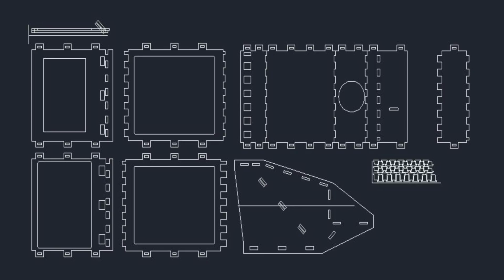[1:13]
Since my last video, I've had a couple of projects that I've been working on. One project came directly from the comments section after multiple comments related to, "It looks like you're reading a script in your videos." All I can say to that is, well, yeah, of course I'm reading a script. For all of the videos that aren't shot run and gun style on my cell phone, I write out a script, edit it to make sure that the ideas and concepts that I'm trying to convey are going to be easily understood. Then I sit in front of my camera, recording it over and over until I finally get a version of it that isn't absolutely terrible.
So I decided that I should take heed to the counsel I was getting from the comment section and go shopping for a teleprompter. I have to say that I was a little taken aback to see that a box with one of the sides set at 45 degrees and a 10 by 12 inch piece of single-strength glass was going for $150. So instead of just being done with it and pressing buy it now, I decided to spend about $600 worth of time and $25 in material to fabricate my own.
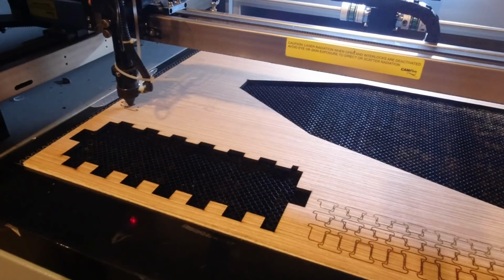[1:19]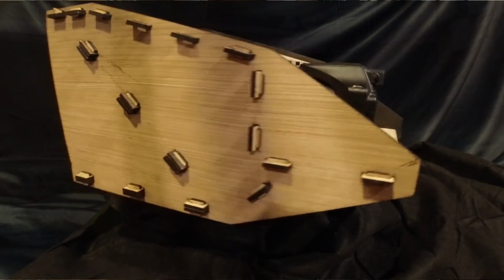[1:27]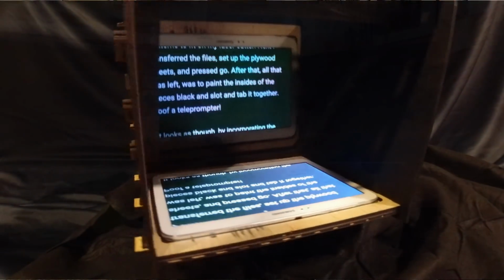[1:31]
As with all of my projects, I started out by drawing it up in AutoCAD and nesting the flat patterns to fit on my laser cutter. Next, I transferred the files, set up the plywood sheets, and pressed go. After that, all that was left was to paint the insides of the pieces black and slot and tab it together. Poof! A teleprompter! It looks as though, by incorporating the teleprompter into my video production, I'm able to get rid of the terrible reflections that I get in my glasses when I shoot my videos sitting at my desk looking out the window.
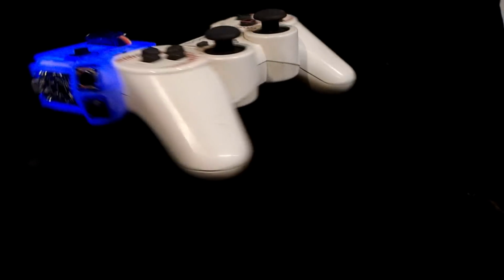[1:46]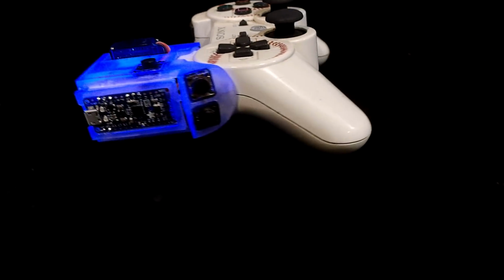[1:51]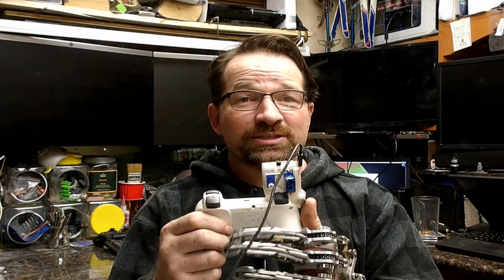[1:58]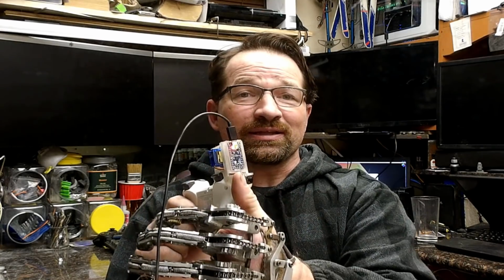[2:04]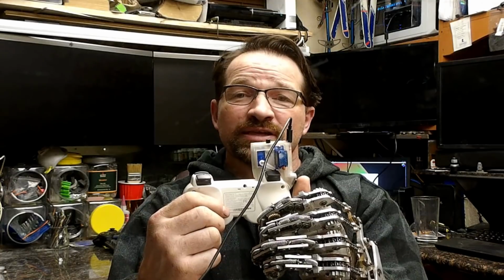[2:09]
My other project, the one that I think my subscribers will find much more interesting, is a glue-on mod for the PlayStation 3 controller. As you can imagine, since I lost my fingers, my super elite gaming skills have suffered dramatically when it comes to pressing L1 or L2 on the controller. To remedy this, I designed a resin-printed attachment that holds a couple buttons and servos. The way this gadget works is when I press on the clicky button on the side of the device, it sends a signal to the microcontroller that then tells the servo to move and press on the controller buttons.
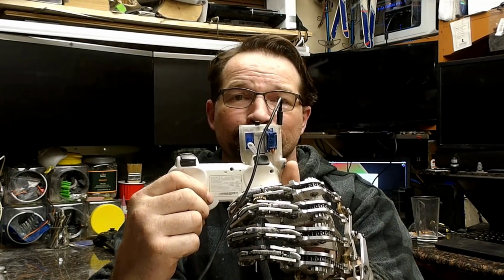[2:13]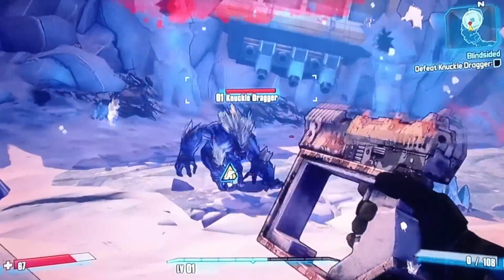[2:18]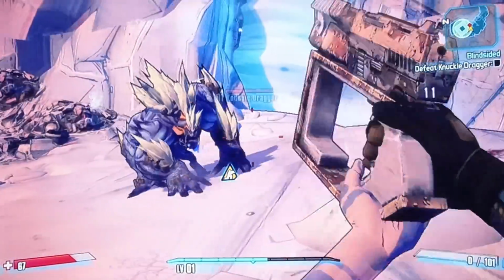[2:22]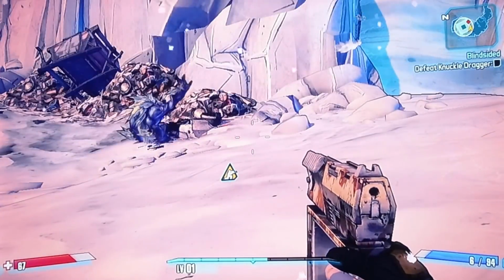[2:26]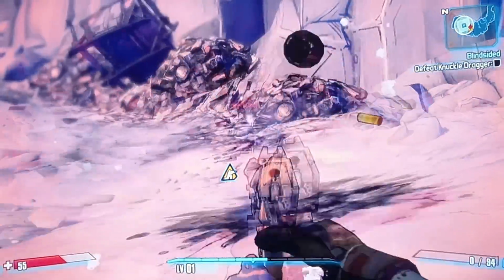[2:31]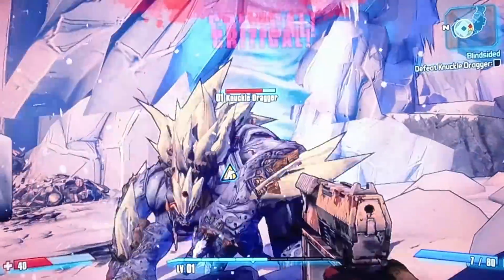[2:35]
Initially, I was sure that I would want or need a rapid-fire function, but so far, the games that I've been playing don't have much of a need for that function, so I don't have it activated. But if or when I do realize the need, I'll modify the software so that the button on top switches between single and repeated pressing of the controller button. The dial on the front will vary the cycle speed of the rapid fire.
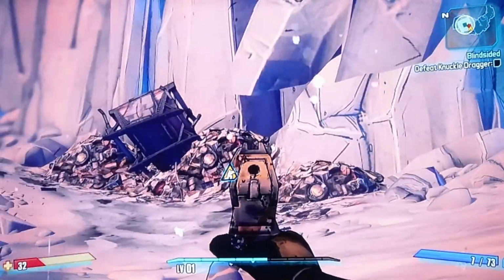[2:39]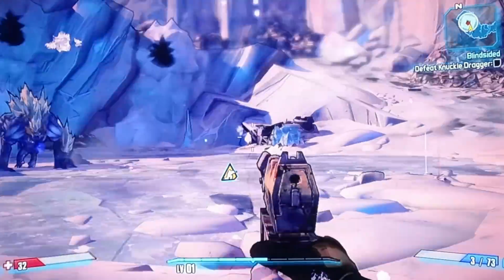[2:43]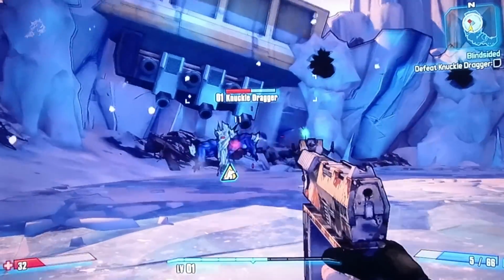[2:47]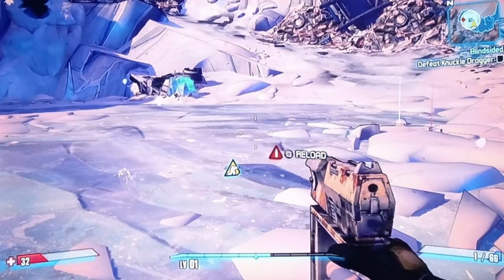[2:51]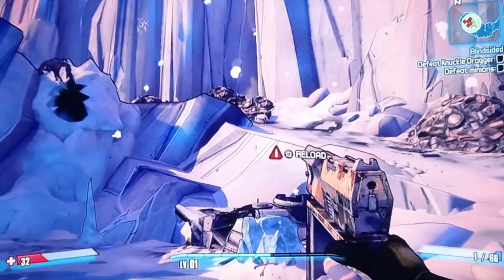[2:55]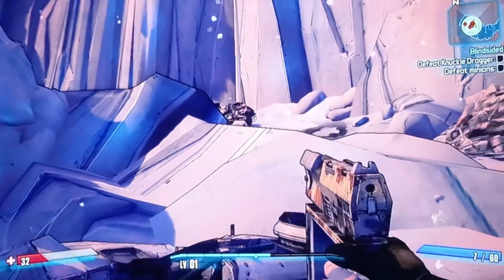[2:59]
Now, it's been years since I've dedicated the time it takes to play a video game all the way through. And even now, I don't see myself spending a ton of time playing video games. But this device isn't exactly for me. It's for someone that used to play video games on the regular, and unfortunately, recently found themselves becoming a member of the illustrious Missing Parts Club. Hopefully this will be a total game changer for them.
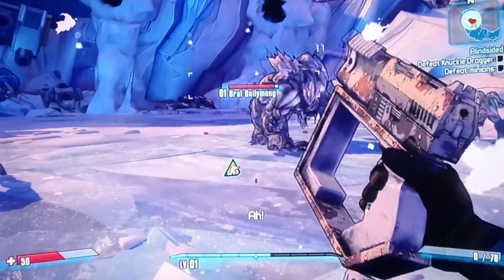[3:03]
Regaining the ability to immerse themselves in video games just might be the thing that brings them out of the depression that goes along with suddenly finding themselves without some of their OEM parts. So let's take a look at what went into creating this little device.
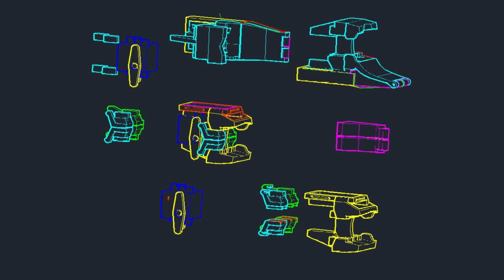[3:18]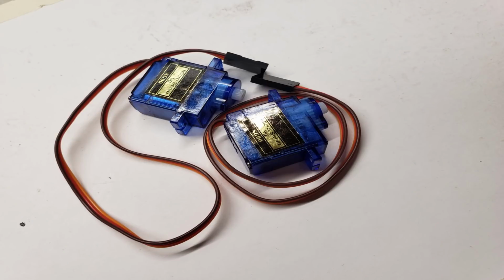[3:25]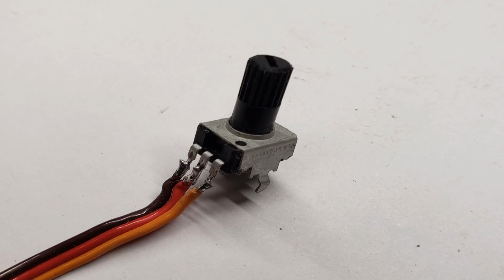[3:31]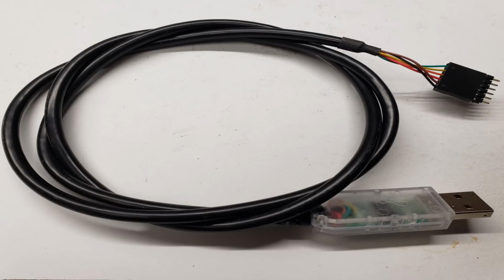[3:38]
As with all of my projects, I started out by modeling the stock controller and all of the electrical components in AutoCAD. For this device, I'm using 2 9-gram microservos, 3 12-millimeter tactile momentary switches, a 10K potentiometer, and a 5-volt Trinket Pro. If you plan on following along, you're also going to need an FTDI programming cable, because the bootloader on the Trinket Pro doesn't work with Windows 10.
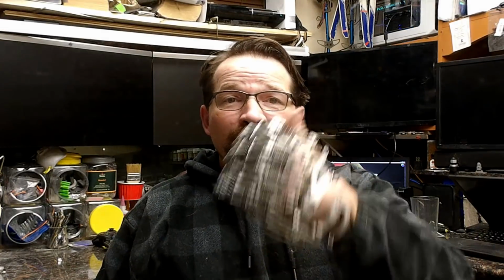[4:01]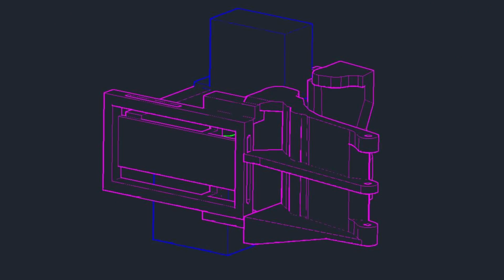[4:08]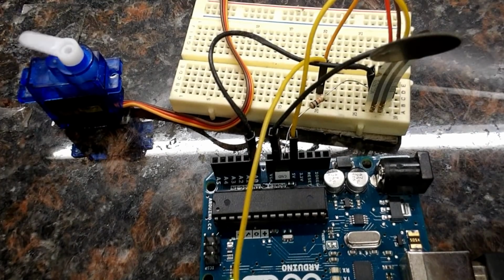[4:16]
The first iteration of the trigger mechanism was designed to use a pair of force-sensitive resistors to generate an analog signal where the harder you press on the buttons, the faster the controller buttons would be cycled.
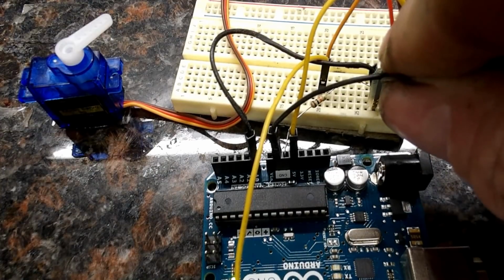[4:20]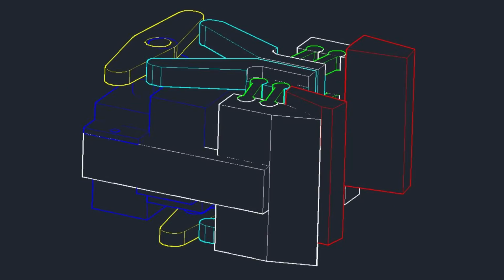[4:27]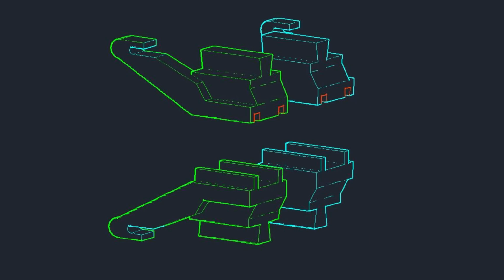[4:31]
It was great in concept, but not all that awesome in the real world. Another change that took place throughout these revisions was the progressive deletion of all of the linkage assemblies that I used to connect the servos to the controller buttons.
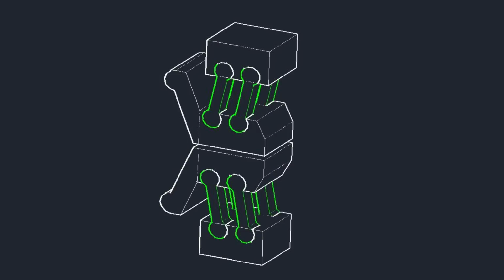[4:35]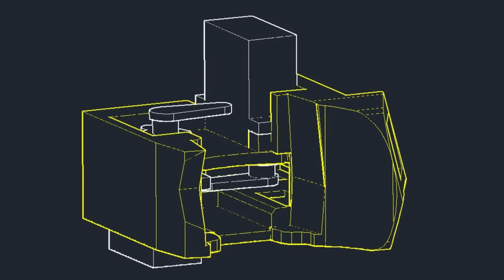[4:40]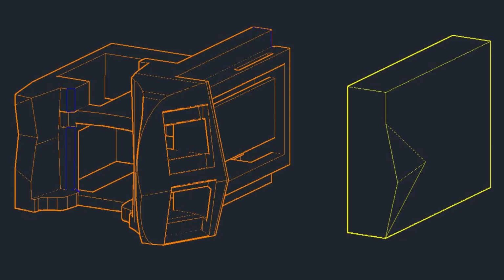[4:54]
The first version used a set of parallel fore links to translate the servo motion to the controller buttons. On the final version, I managed to move everything around so I was able to delete all of the linkages so that the servos directly contacted the controller. That series of changes reduced the total number of printed parts down to just 2, the body and the cover.
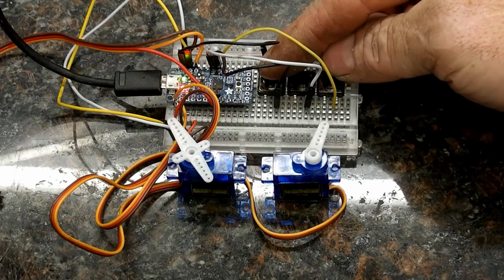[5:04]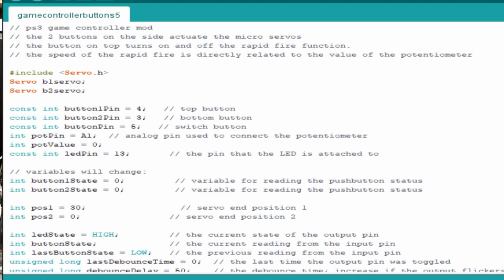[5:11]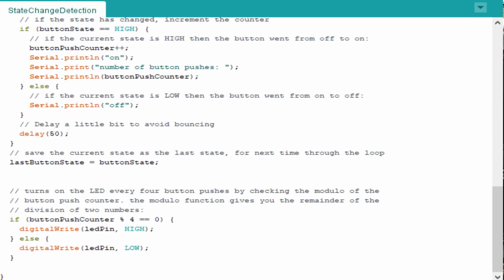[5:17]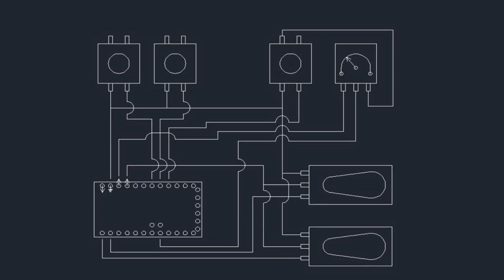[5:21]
After I printed one up and sanded everything so I had a nice tight fit to the body of the controller, the next thing that I needed to tackle was the wiring and programming of the components. I set up the components on the breadboard and started writing the code for it. A lot of the code is made up by simply cutting and pasting from the example programs available in the Arduino IDE. The switches are wired in pull-up configuration, so I could wire them in parallel, using one common wire and three signal wires, one for each switch.
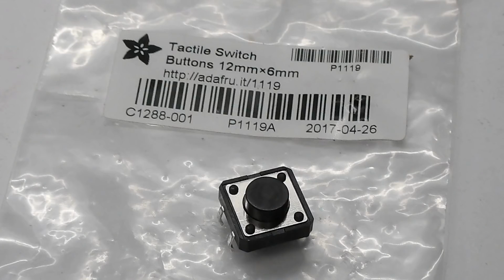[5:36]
Had I wired them in pull-down configuration, I would have had to also include a set of pull-down resistors wired to ground. One of the cool things about using the square clicky switches is that there are two extra solder points on the switch bodies that can really help out in situations like this, where the space for the wiring is really tight. Eventually I'll model up and print one of these devices for the PS4, and likely the PS5,
once I manage to get one in a year or so. Unless, of course, someone feels so inclined as to kick one down for Christmas. Totally unlikely, but I'll let you know if something like that happens.
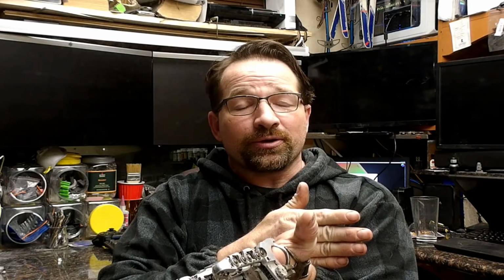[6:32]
I hope I'm able to return the favor and inspire a bunch of people to come up with amazing projects for the market sector, because there really is a need for devices designed for partial hand amputees. The problem lies in that for someone that has the same disarticulation as I do, at the metacarpals, you have too much hand for one set of options and too little for another.
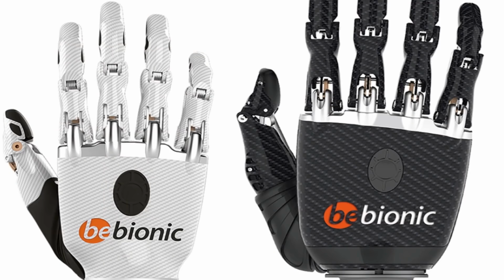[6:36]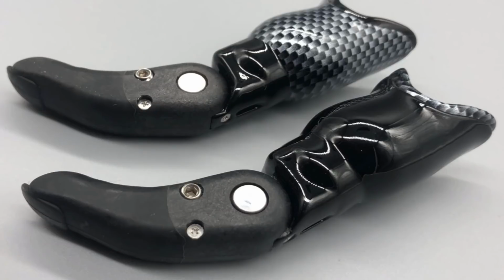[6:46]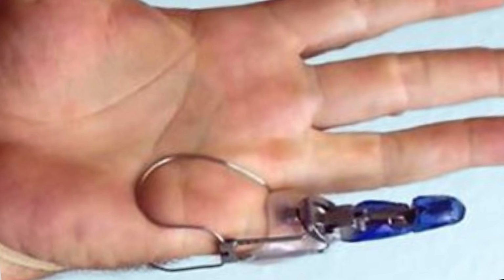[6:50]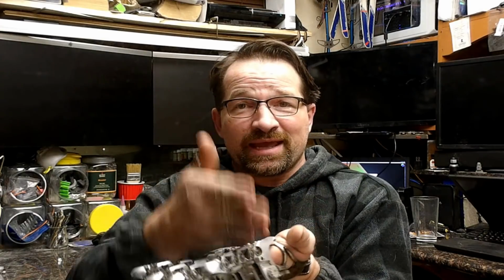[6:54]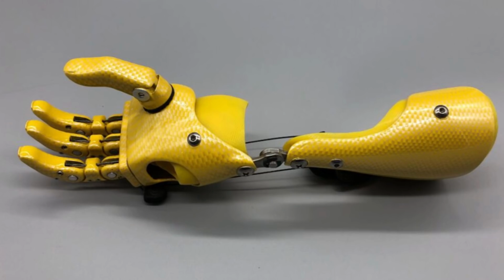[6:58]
Say I had lost my hand to the wrist. There are all kinds of amazing devices available. Of course, none as good as the original hardware, but still, just as amazing. And if I still had the proximal bones of my hand, there are a couple fantastic devices that manage to restore both the length and dexterity to the hand. But in my case, where the disarticulation happens at the metacarpals, there just aren't a lot of options that are strong enough for daily use out in the wild.
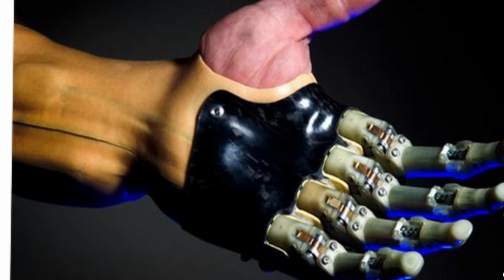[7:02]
That's where my focus is primarily directed, developing partial hand prosthetics at the metacarpal level. And hopefully, with all the views that my videos get, my projects will be shared and eventually be seen by the right set of eyes, so that the products that I've come up with can be made available to the people that are in need.
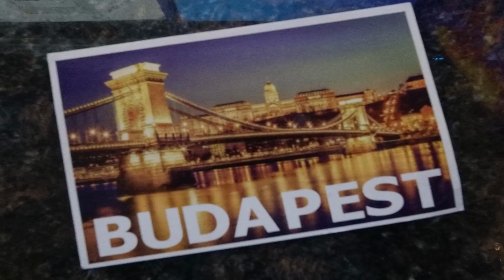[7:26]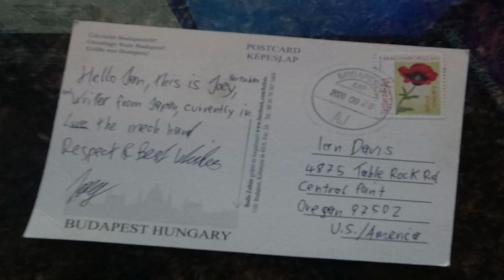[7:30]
I want to reiterate that I really do have the best subscribers in the whole of YouTube. The other day, I had a subscriber from Budapest track me down and send me a postcard with a note stating how much they loved my mechanical hand project. How amazing is that? I really do love to read and interact with subscribers that take the time to post in the comment section.
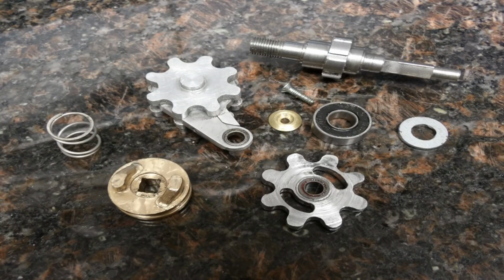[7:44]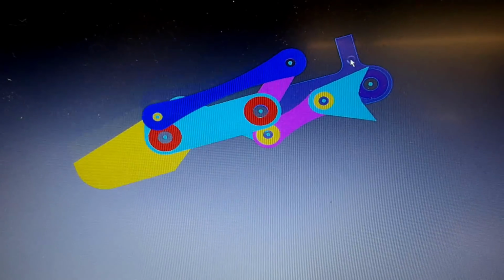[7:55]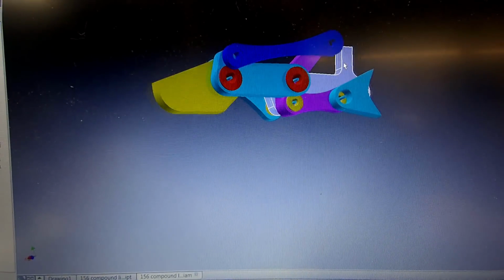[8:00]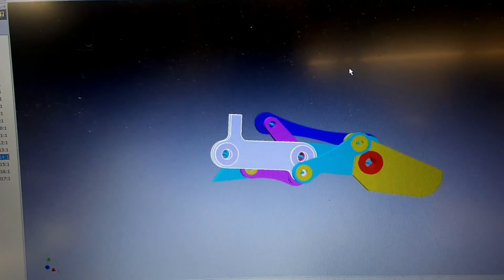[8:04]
In other news, I've been making quite a bit of progress on the Ash vs. Evil Dead chainsword, and I'll be sure to share it with you in the next video. I've also been working on the designs for the compound link finger. It's just about ready to make a physical prototype. I've run it through FEA and simulation, and it looks pretty good. The only thing that I don't really like with this design is that the joints are in single shear rather than in double, like my other designs. But I'll be able to see if that's going to be a deal breaker in the near future.